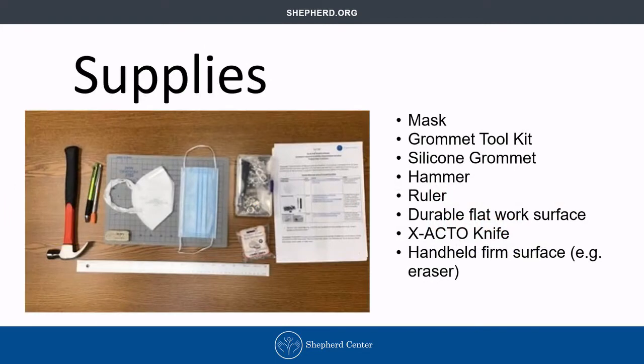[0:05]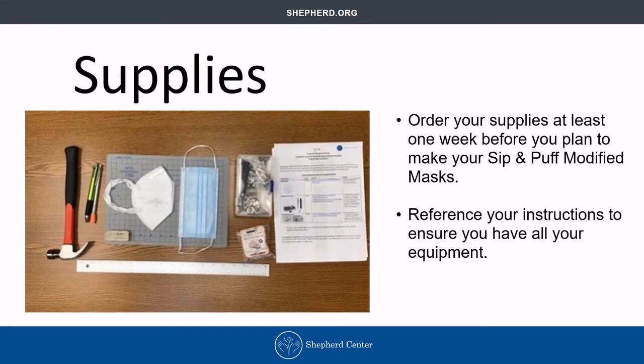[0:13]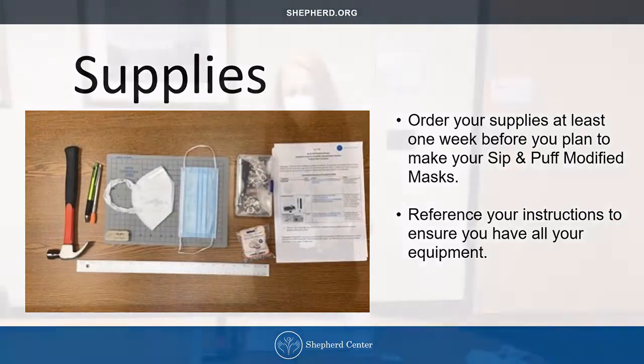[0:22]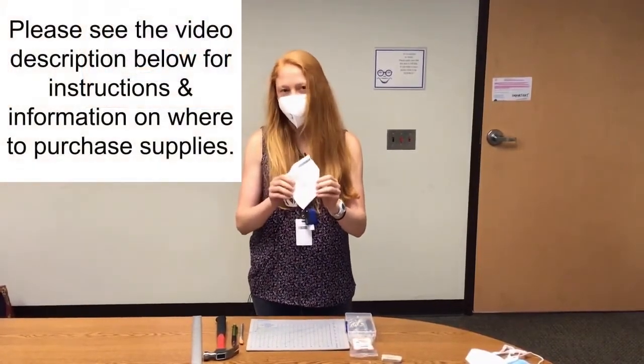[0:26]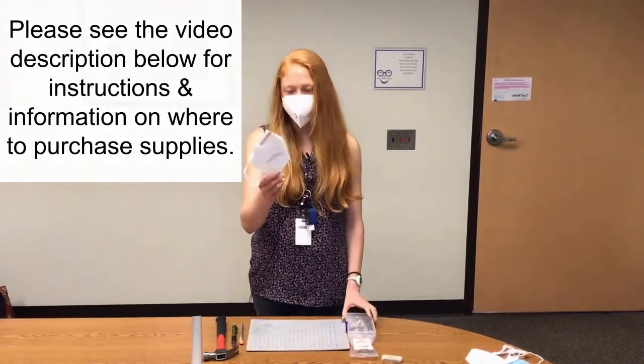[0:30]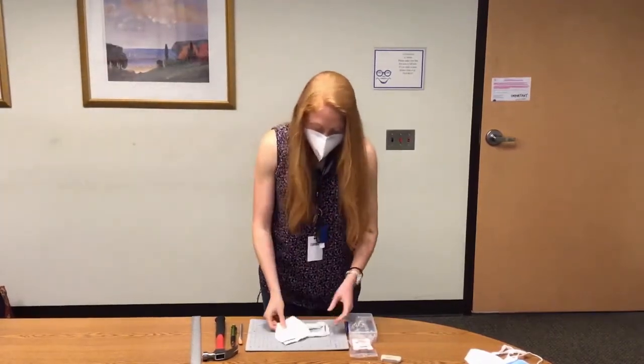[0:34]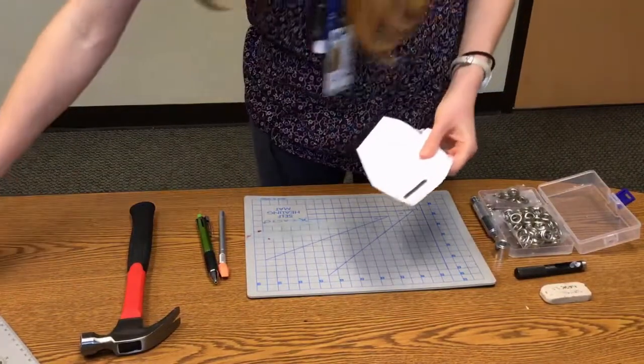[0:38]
We are making a sip and puff straw adapted KN95 mask. We'll start with an unmodified mask, just straight out the box, KN95. And the first step is to measure out your hole punch location.
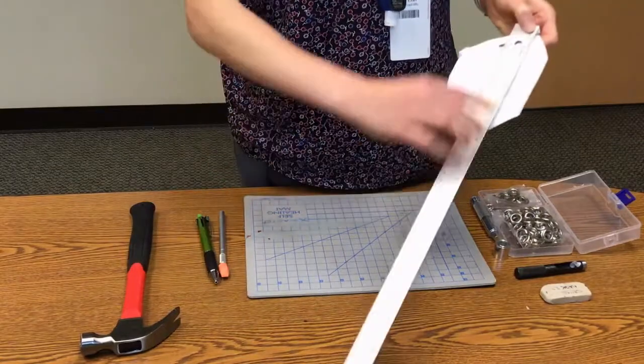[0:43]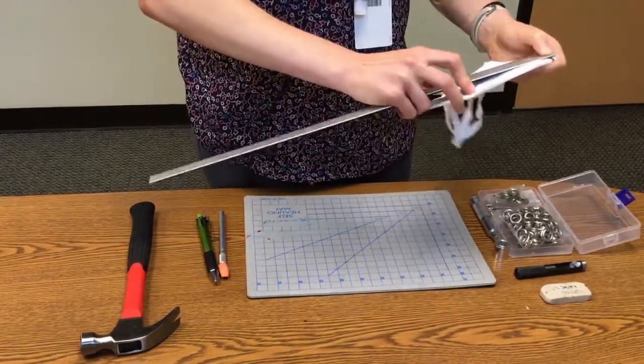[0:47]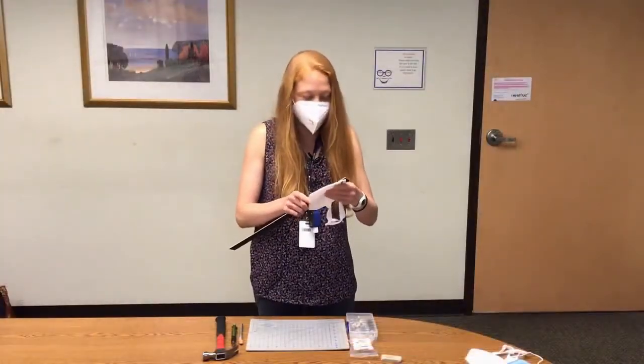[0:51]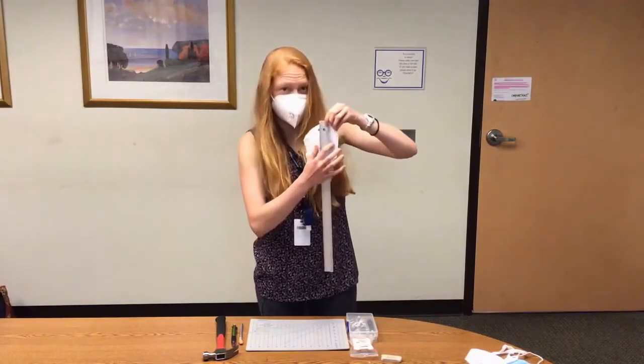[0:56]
So for most people, from the top arc down, 2 inches works really well. You could up that by an eighth of an inch or lower it by an eighth, but usually 2 is good. So that's right here.
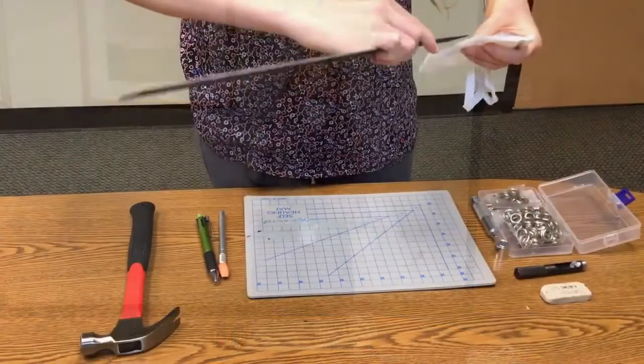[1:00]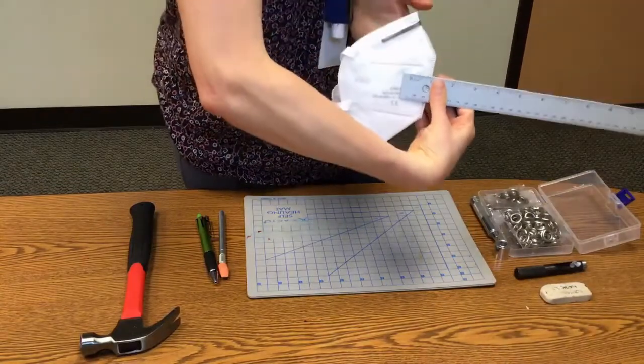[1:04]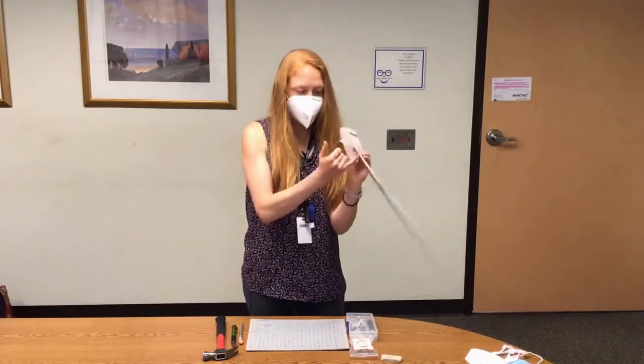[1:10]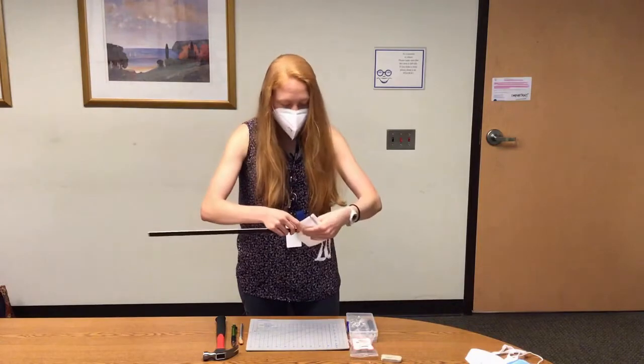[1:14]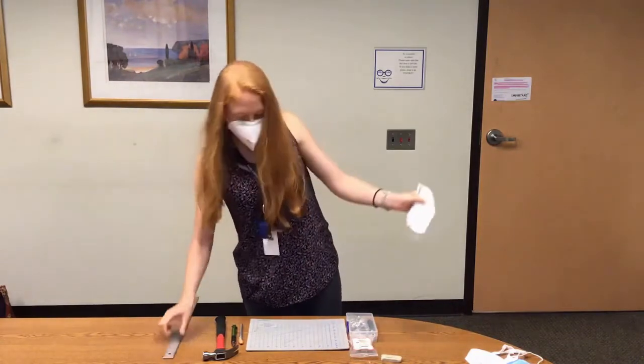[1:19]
And then from the front arc of the mask, you'd measure around 1 inch works best for most. It could be 7/8 or 9/8, but 2 inches down, 1 inch away from the front arc works best. Mark that with either a pen, pencil, or your thumb. So that's where I'm gonna punch the hole.
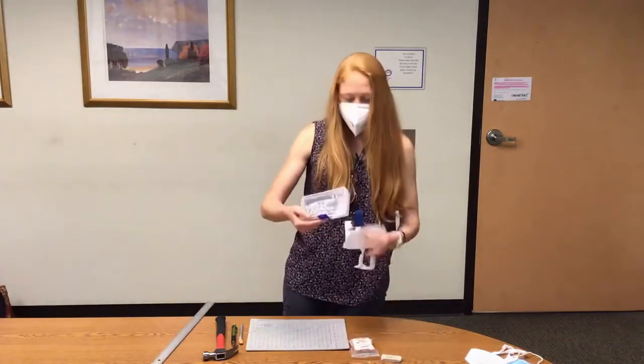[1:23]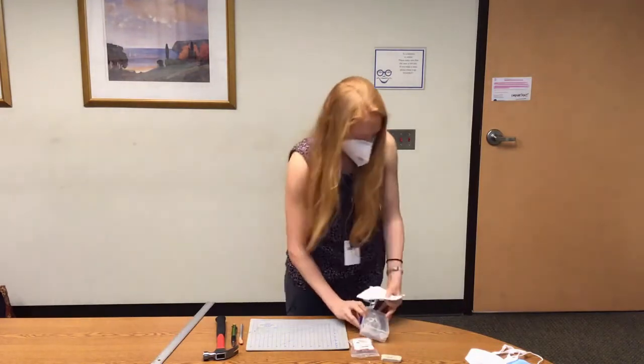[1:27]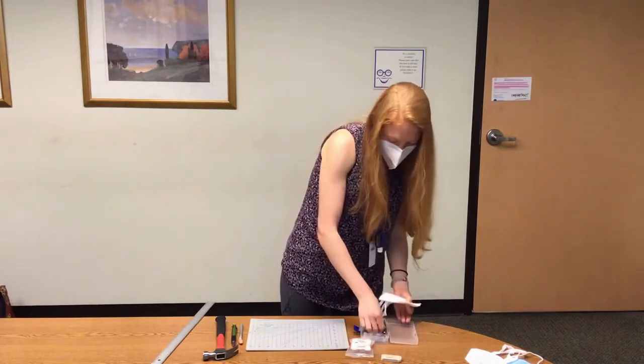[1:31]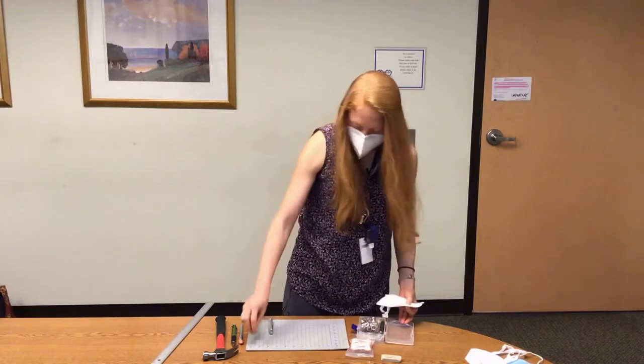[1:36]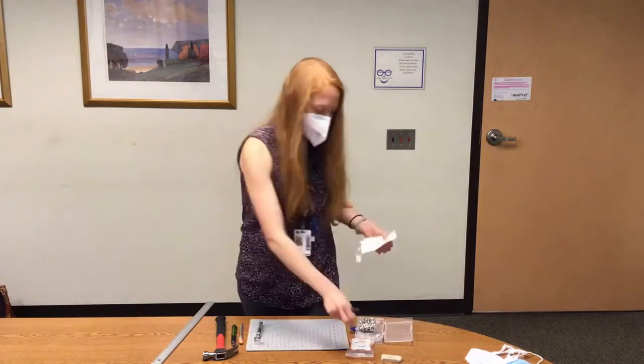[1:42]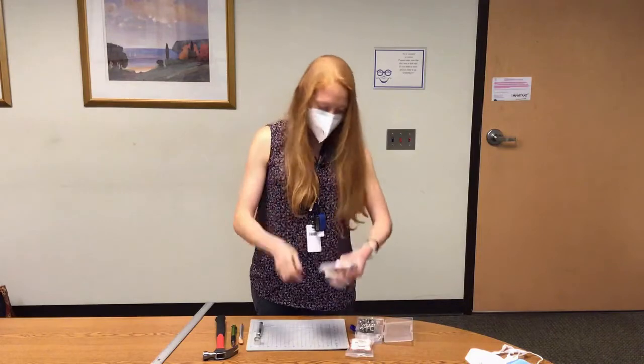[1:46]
The next thing is, you have this grommet setting tool that you can get online. It comes with your top and bottom half of your grommets, the mandrel setting die, and your hole punch tool, which is black with a silver sharp edge. This is what we use to punch the hole, the black tool.
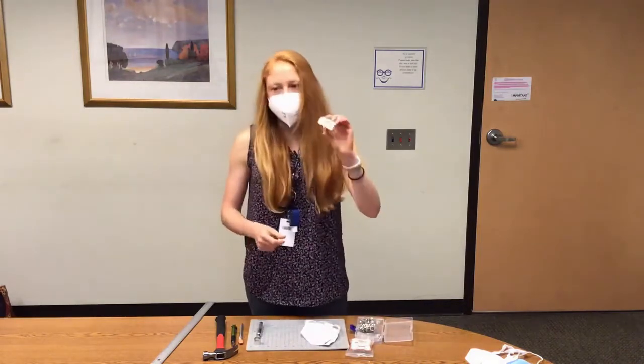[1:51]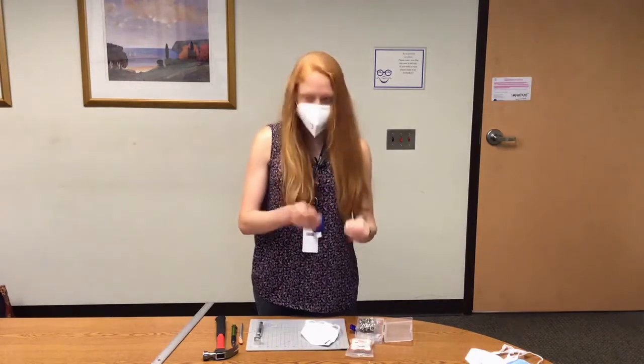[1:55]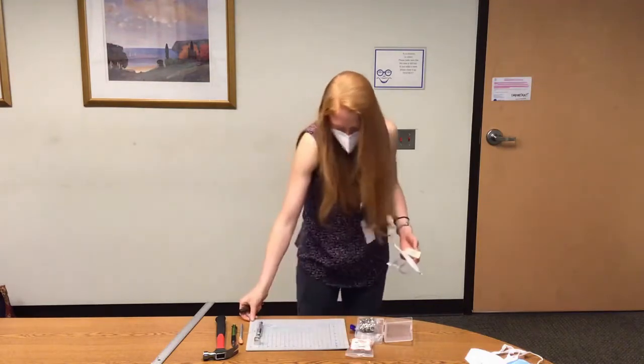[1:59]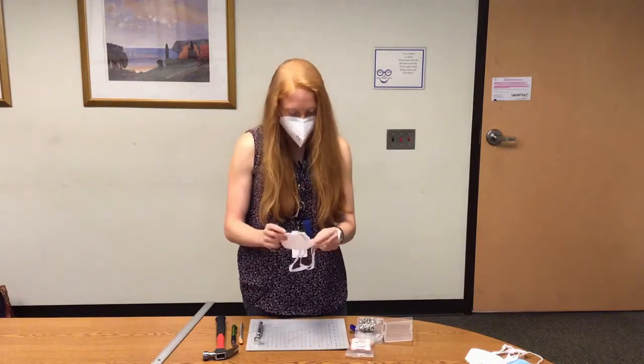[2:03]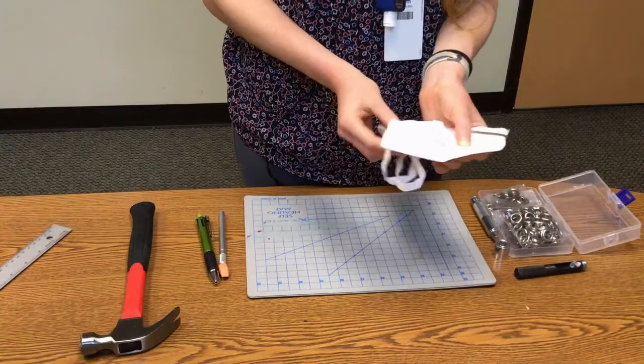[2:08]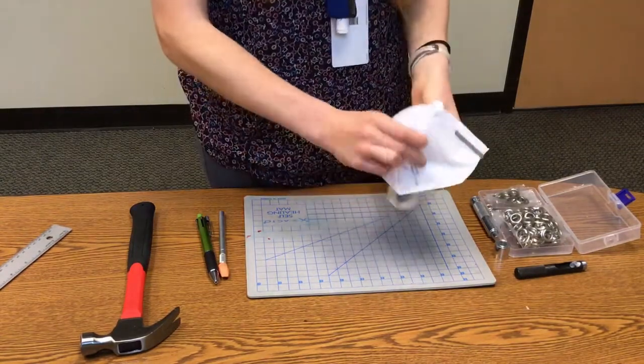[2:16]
I'm using an eraser, but all you need is a firm, durable surface that yields a little bit. Some people can use cardboard boxes, a healing mat, anything that is handheld, durable, and yielding. So I'm gonna take that surface, an eraser in my case, hold it on the inside of the mask. It's used to protect your fingers from getting cut by the sharp edge.
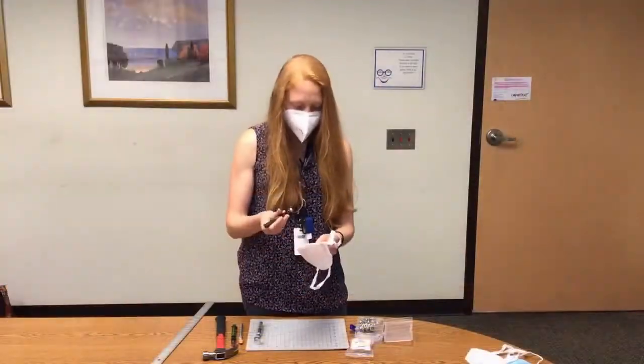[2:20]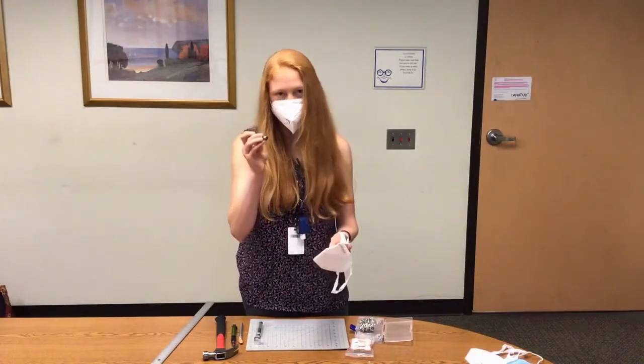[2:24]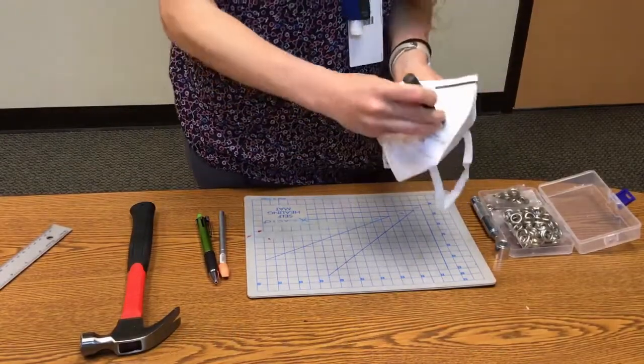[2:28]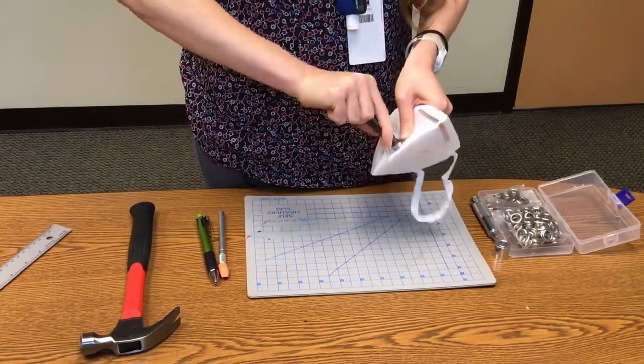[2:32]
Then where you've marked your ideal hole punch location, center the sharp edge of your hole punch tool around that, and then press firmly and twist. So that's what I'll do now.
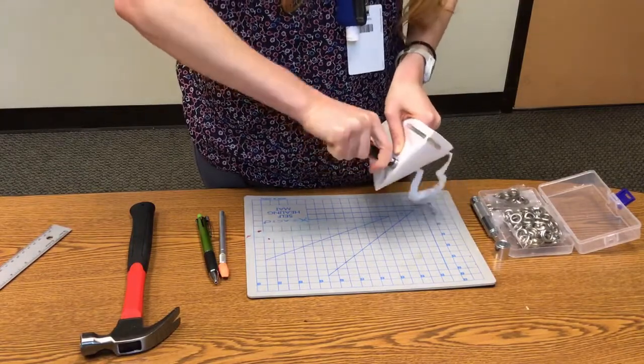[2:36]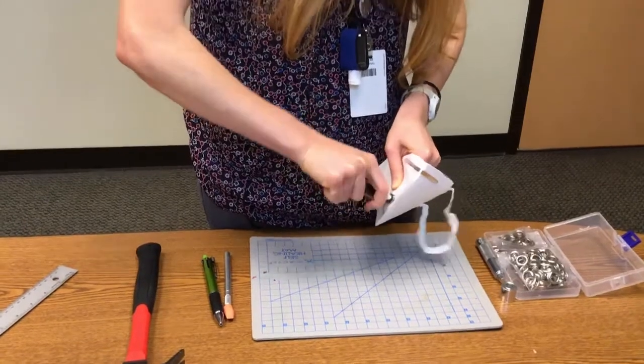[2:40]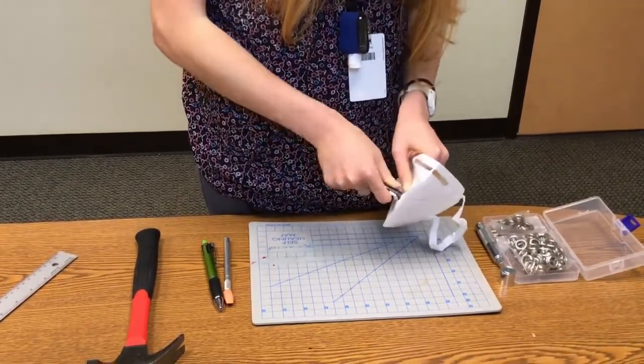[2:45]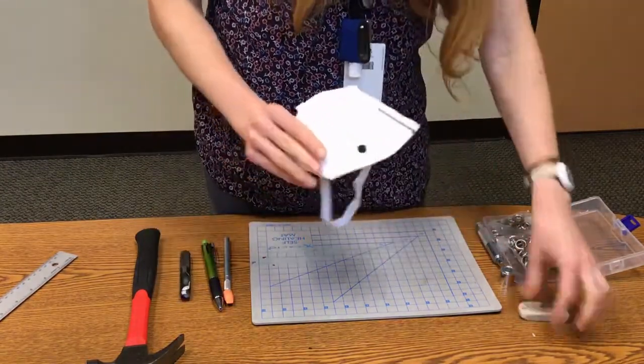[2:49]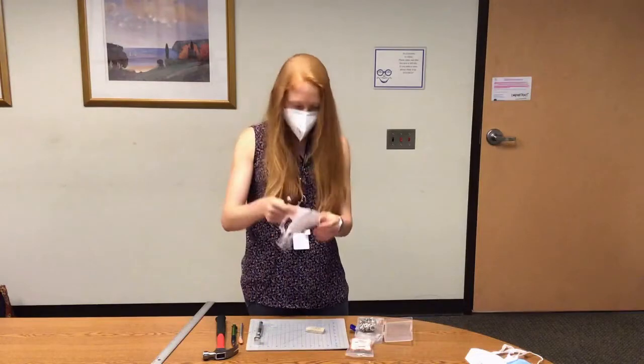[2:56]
Okay, so the hole is punched. Cool. The front looks like that. Inside looks like that. So you can set this tool aside.
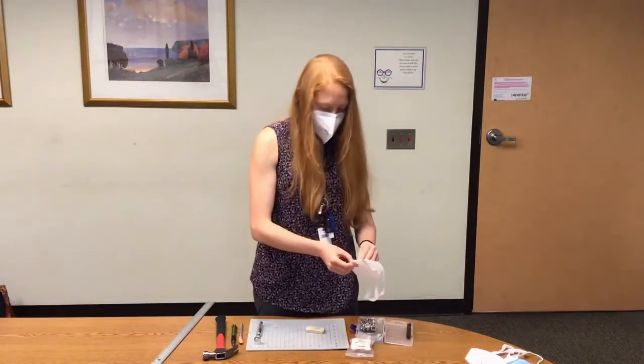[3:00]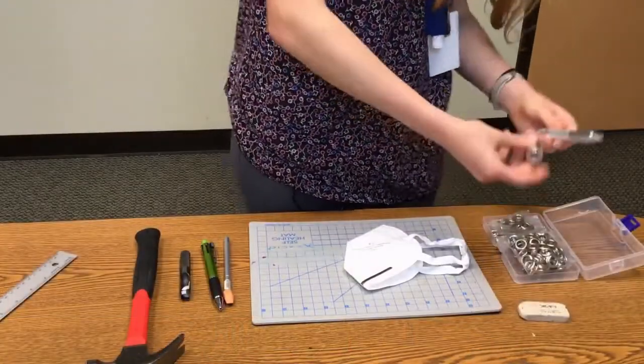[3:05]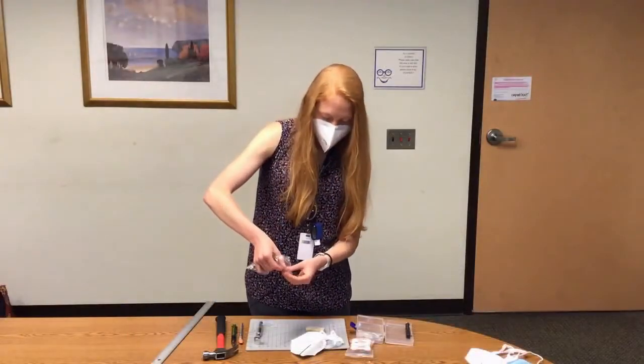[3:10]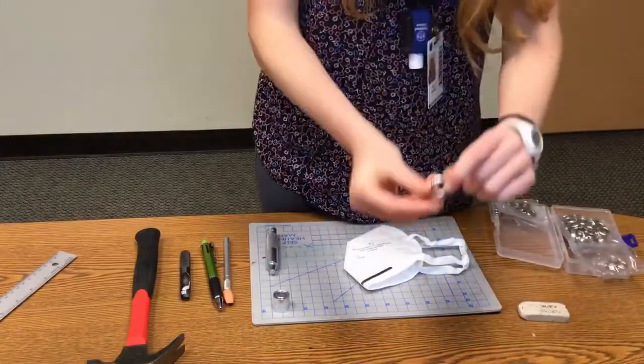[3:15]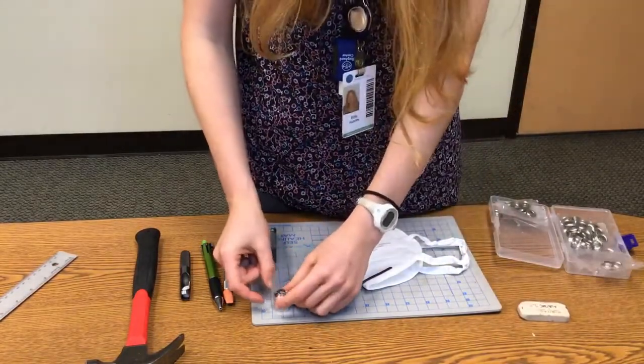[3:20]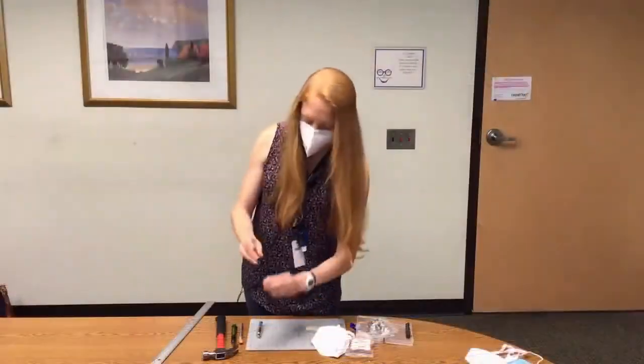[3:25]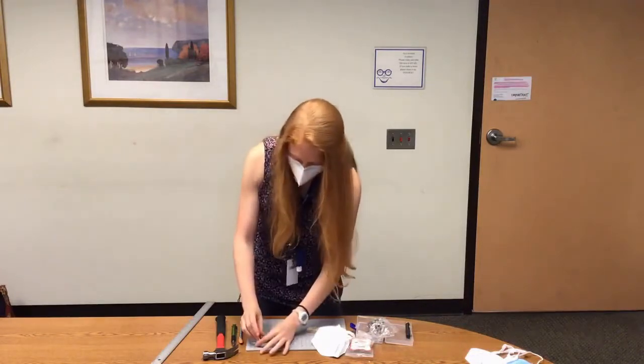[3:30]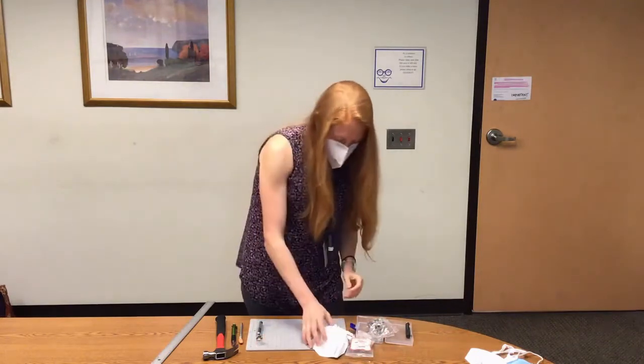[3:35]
The next thing you'll do is align your grommets. So I'm taking out a top half grommet right now. It has a rounded front and a really small cylindrical back edge to it. That's going to be the front facing side of the mask, so you'll see it on this side. You want to align that with the rounded side down onto your setting die. It's a short metal cylinder. So aligned like that. Face that down.
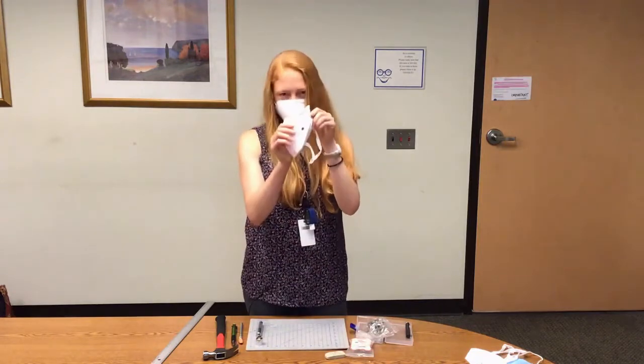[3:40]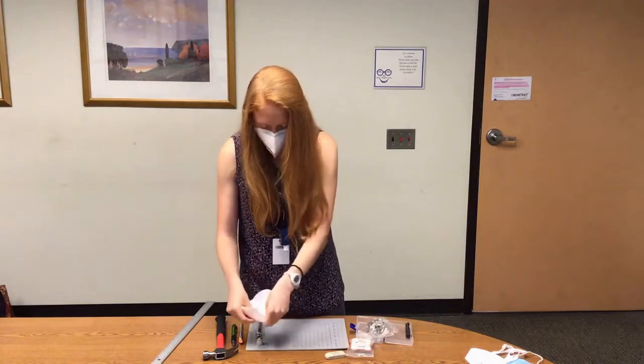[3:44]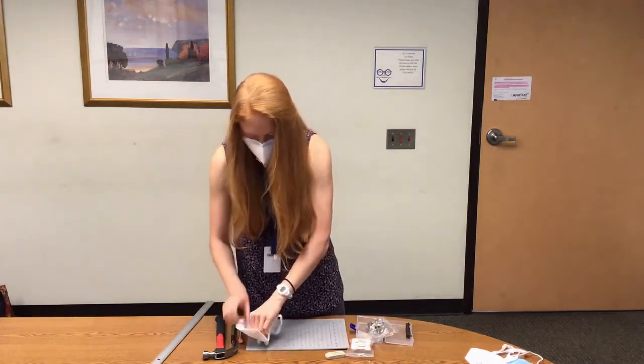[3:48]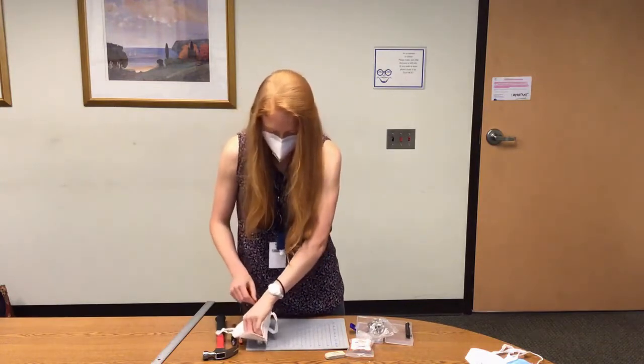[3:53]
Then you'll take the front side of the mask where you've punched your hole, and you'll align the hole around the top of the grommet that's sitting on top of your short metal setting die. I can chill there for now.
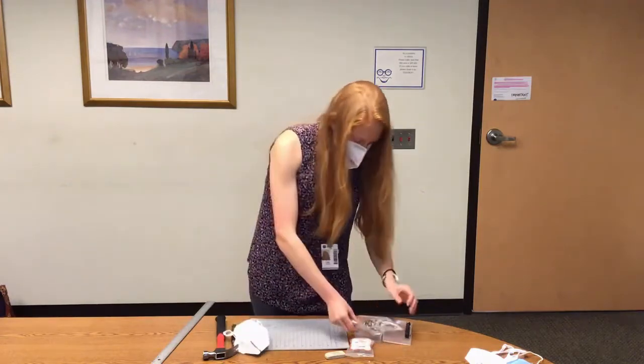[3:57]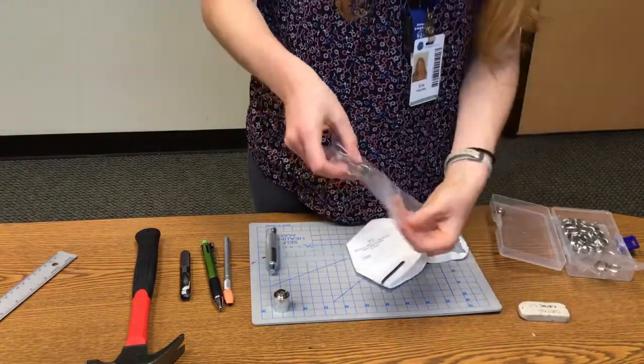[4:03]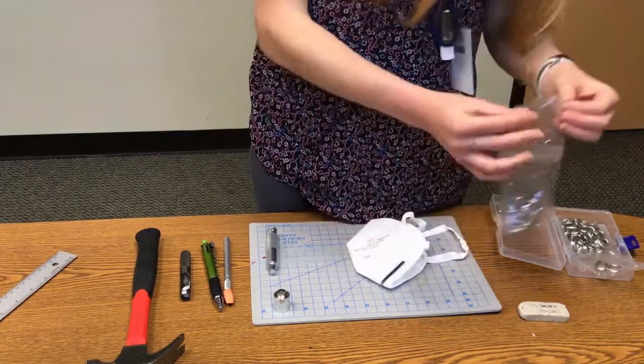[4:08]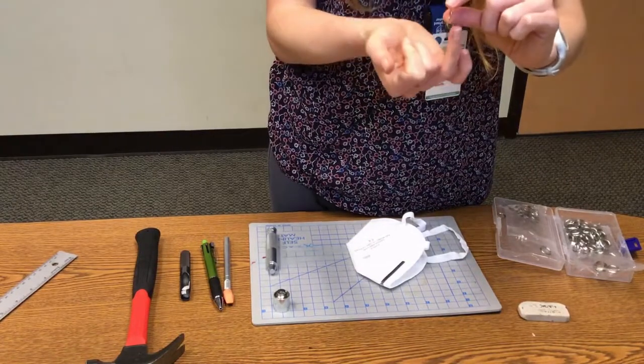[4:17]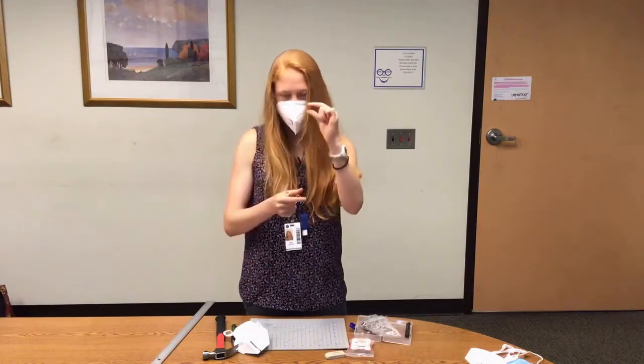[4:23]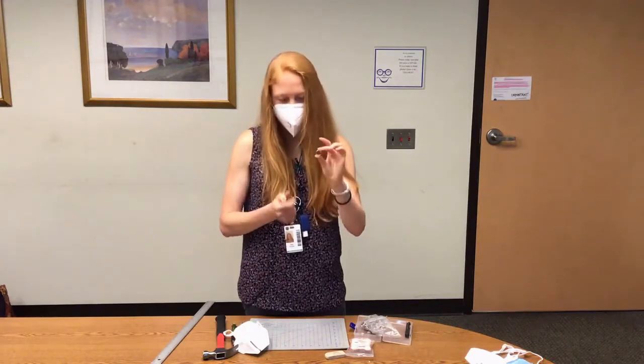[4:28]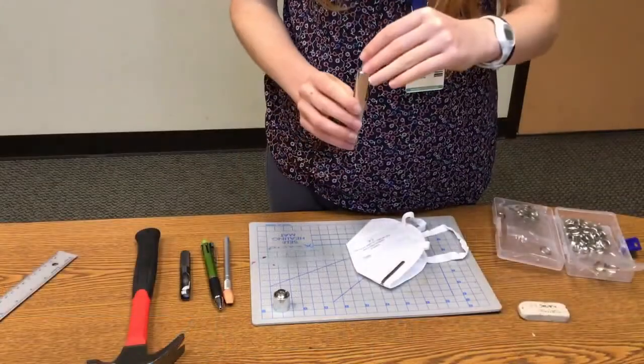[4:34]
Now I'm getting a bottom half of the grommet. It's going to be on the inside of your mask. So you'll take the bottom grommet eyelet. It's a small cylindrical disc. It does not have that straight cylinder sticking out. It's just a flat disc. It has a slightly flatter edge and a slightly rounded edge. You want the rounded edge to be facing this long metal cylinder tool. So face that down.
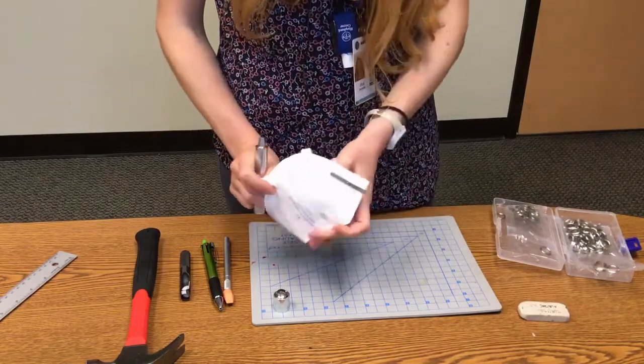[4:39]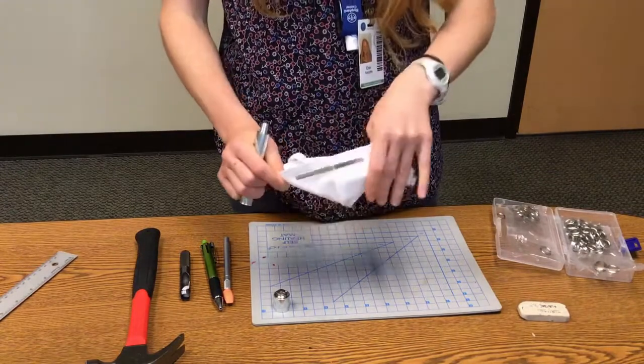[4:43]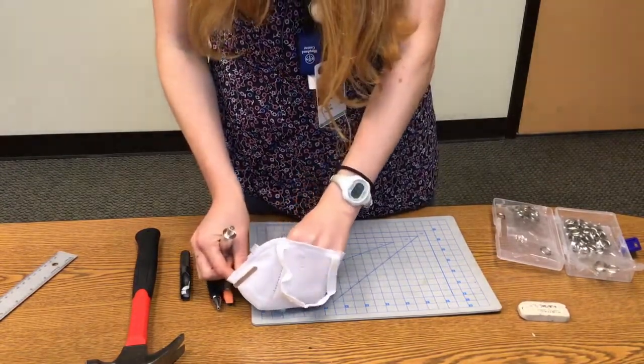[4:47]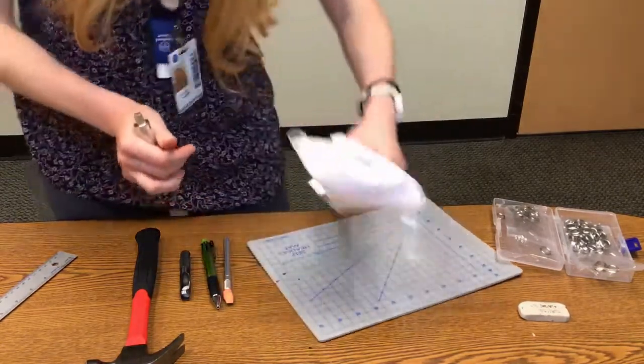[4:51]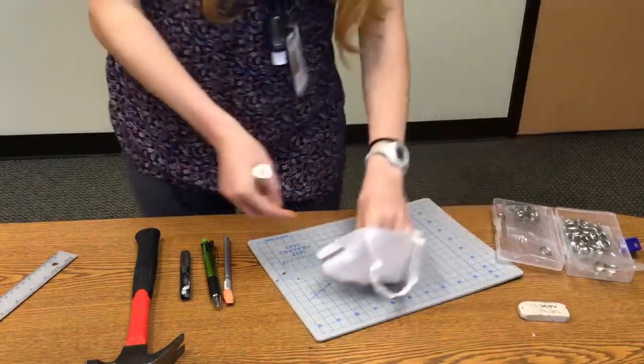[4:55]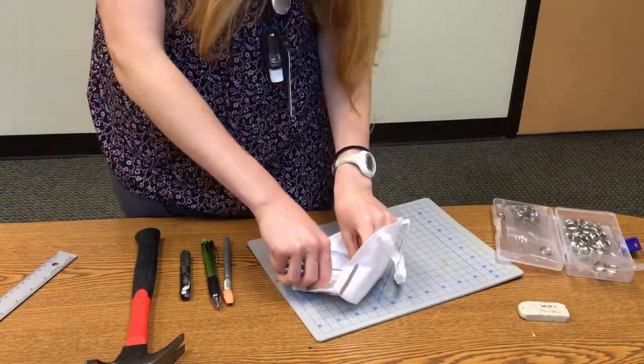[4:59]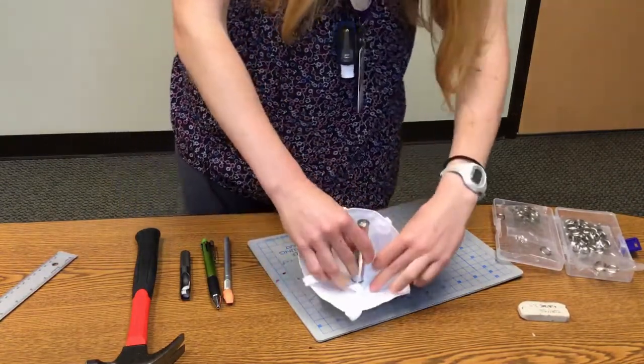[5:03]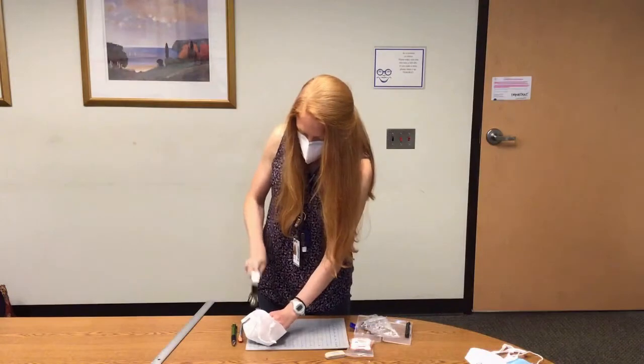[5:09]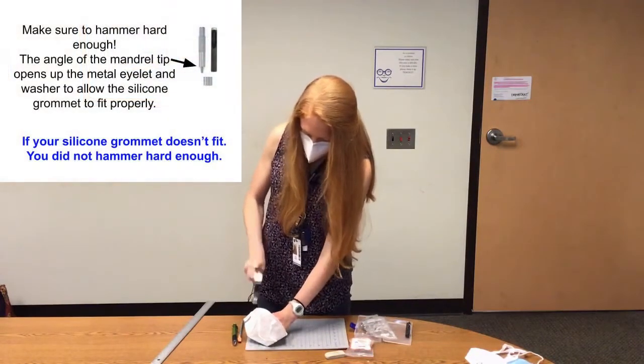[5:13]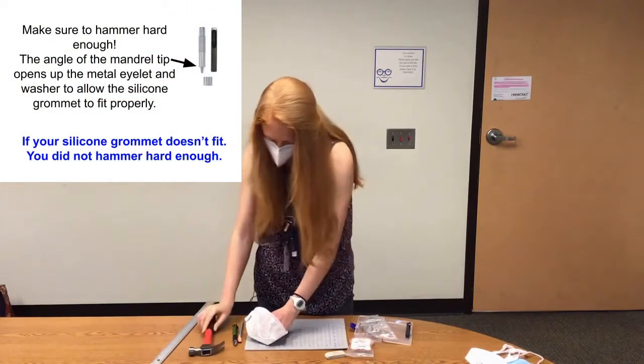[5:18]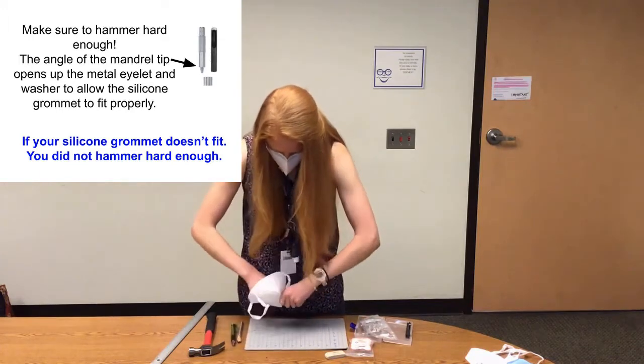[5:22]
Then you have where you've aligned the top grommet on the setting die, the mask hole around that, the bottom grommet eyelet, and then the long metal setting tool. And then you'll hammer that entire assembly down. I kind of hammered a little too hard.
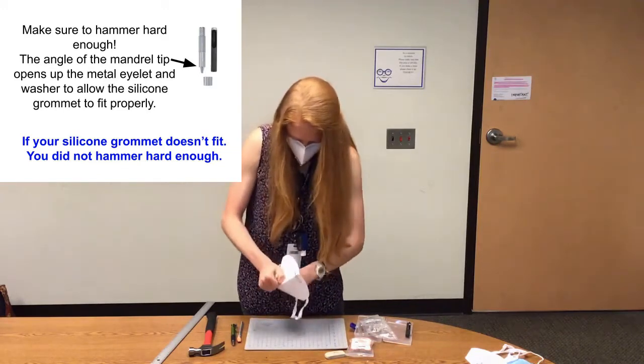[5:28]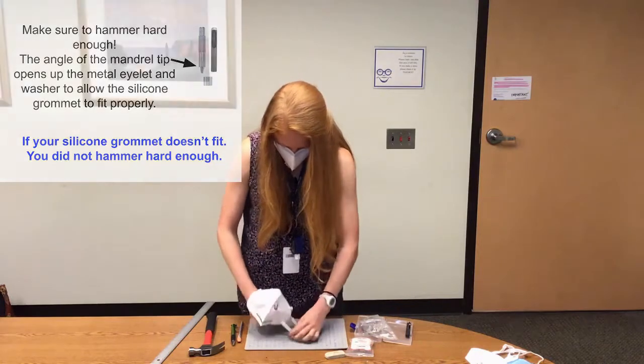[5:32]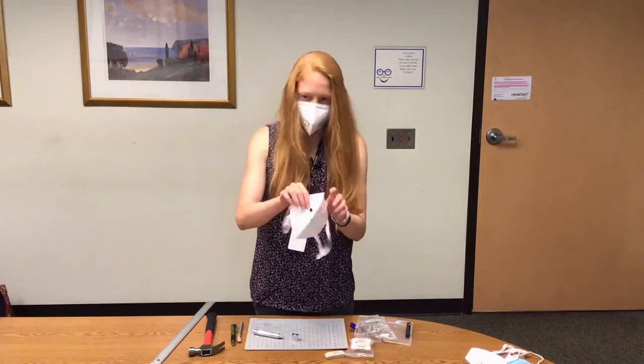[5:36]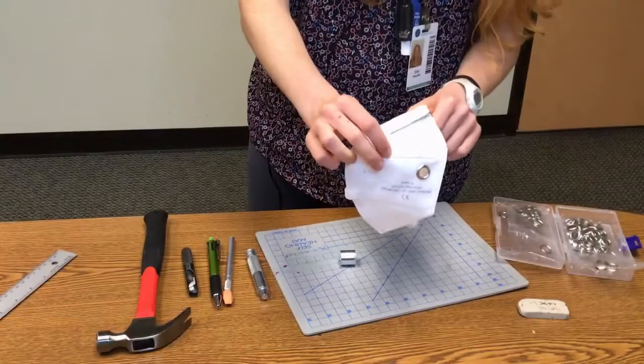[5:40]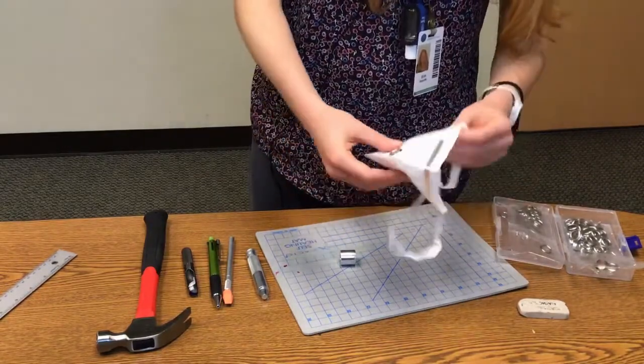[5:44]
Alright, so that's the set grommet. That's finished, this is the front. The inside of the mask looks like that.
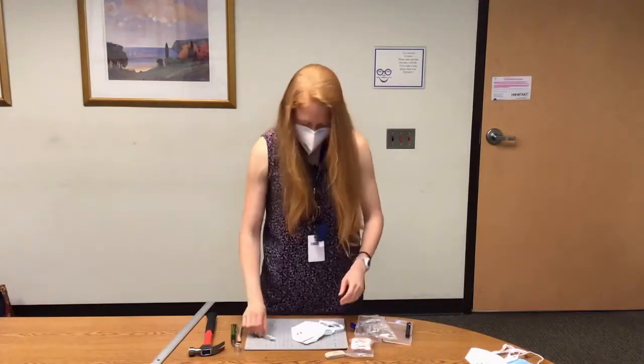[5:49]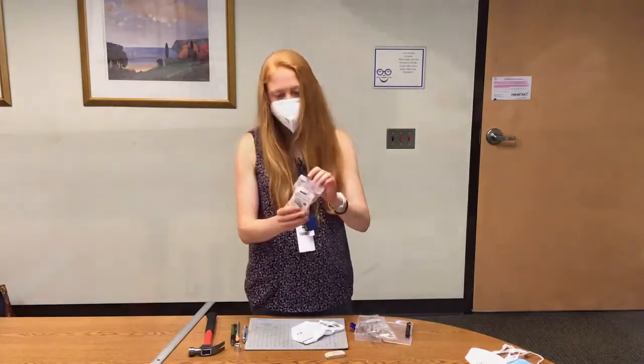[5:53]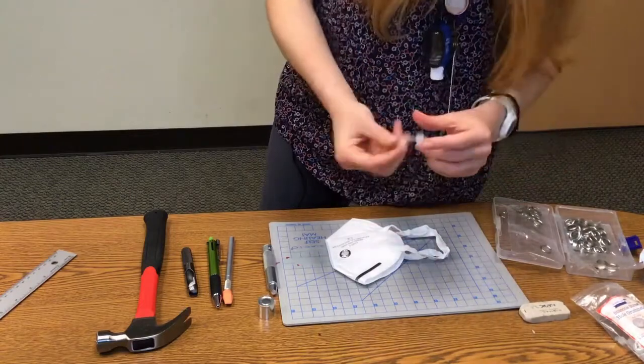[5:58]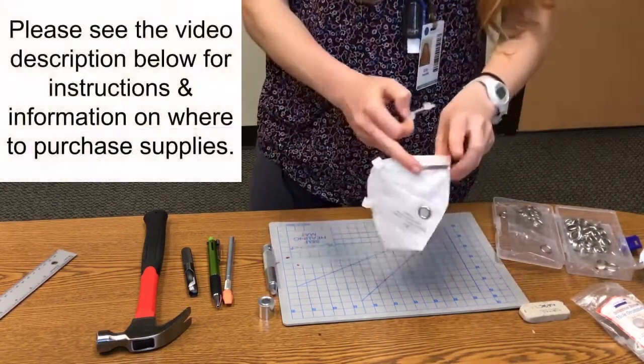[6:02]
The last step is to insert your silicone straw hole grommet with an attachable plug. So you can get these online. They come in 40 per pack for around $9.
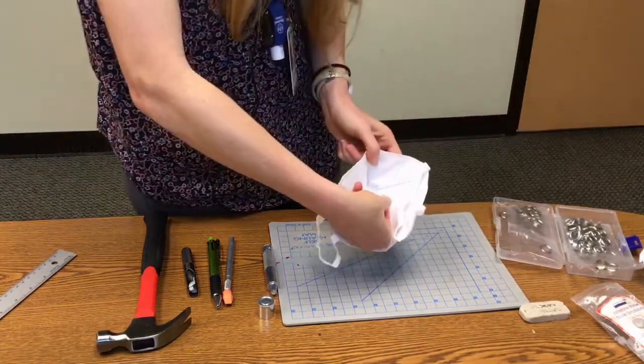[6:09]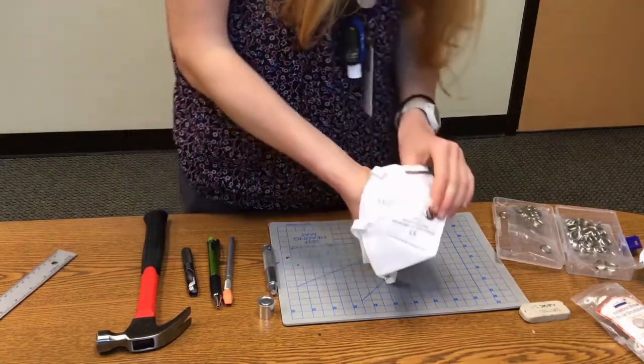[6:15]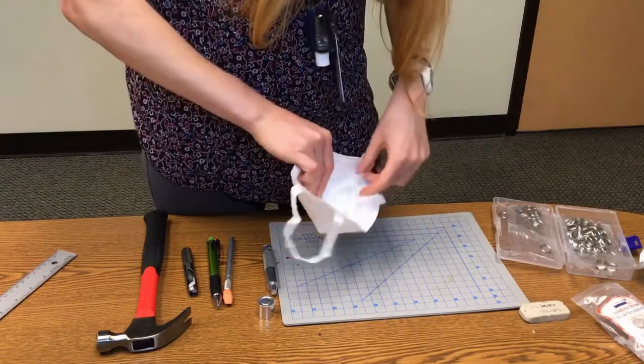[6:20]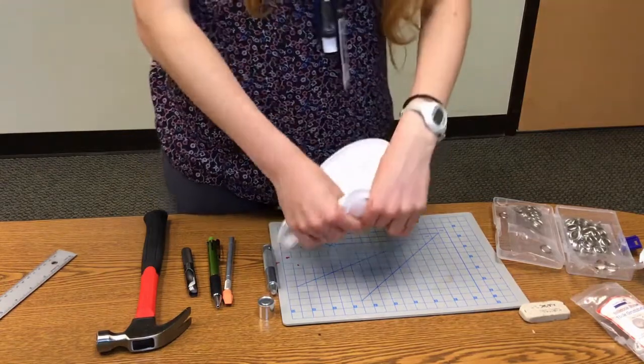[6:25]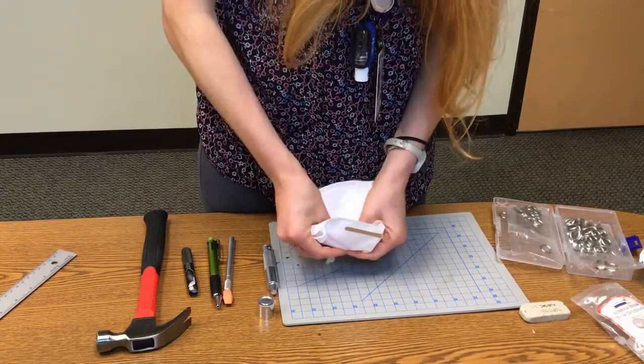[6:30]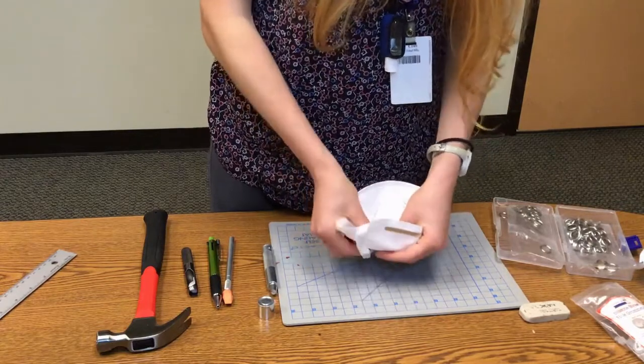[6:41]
What you want to do is make sure that from the outside of your mask, this plug is closing the mask. The easiest way to do that is to take the plug and from the inside align the plug so that the attachable line part of it is parallel with your mask top and bottom, or the line on your KN95. Once you have that plug aligned, insert the silicone within the metal grommet.
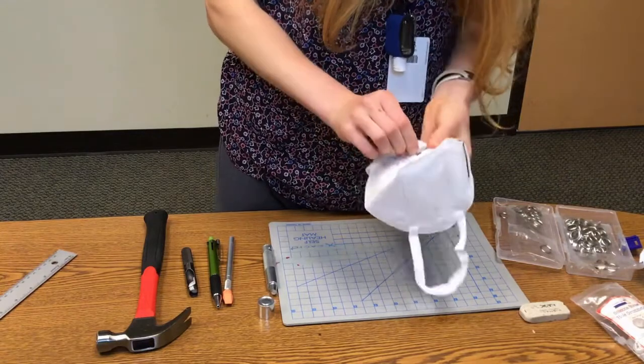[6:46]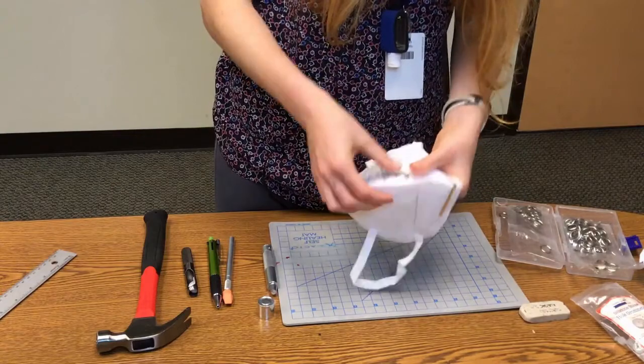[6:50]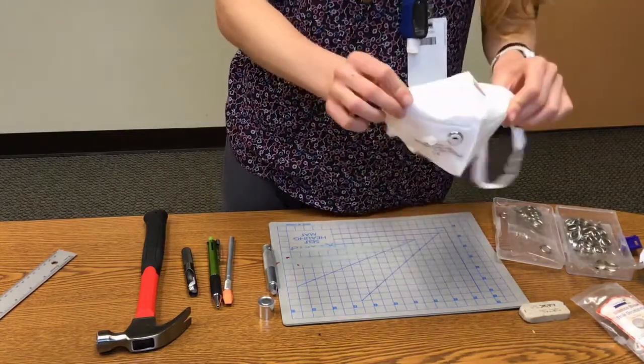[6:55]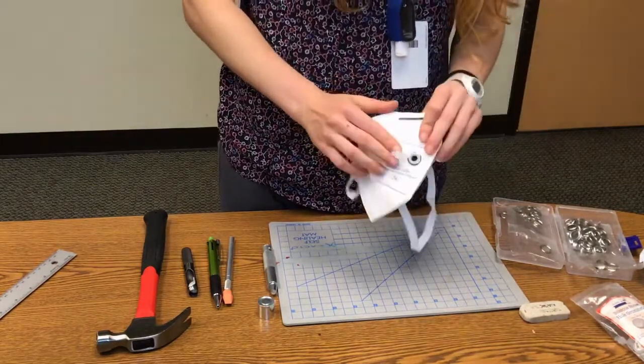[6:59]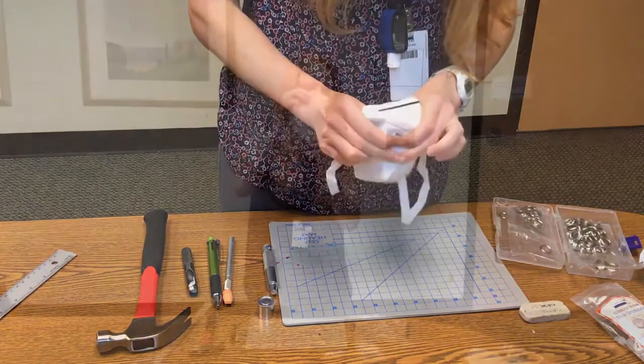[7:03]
And then make sure that the silicone on both sides is hugging each side of the set metal grommet in the mask. So that's done. This is what the finished mask will look like with the plug open.
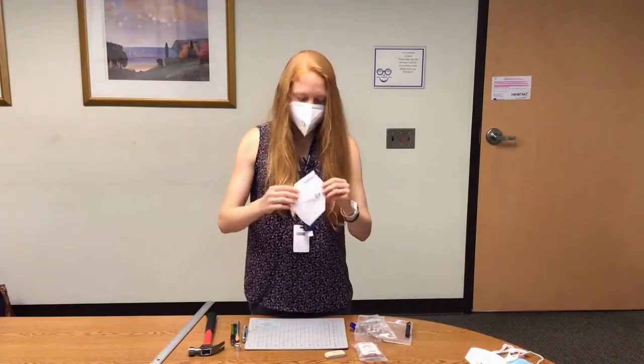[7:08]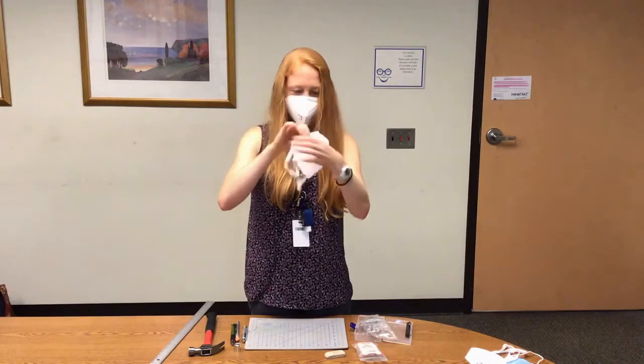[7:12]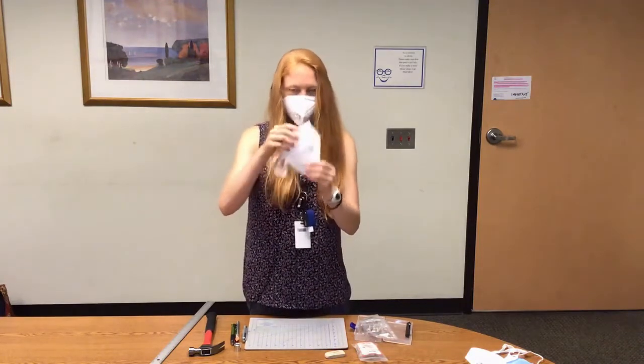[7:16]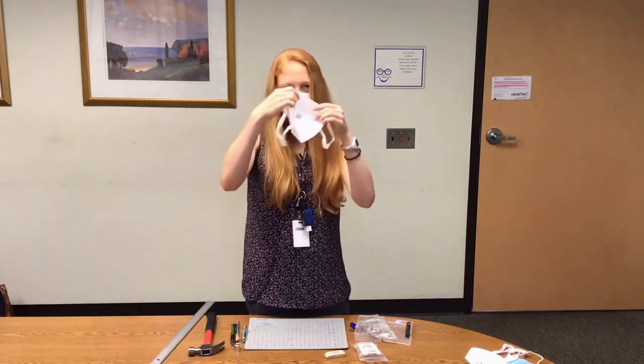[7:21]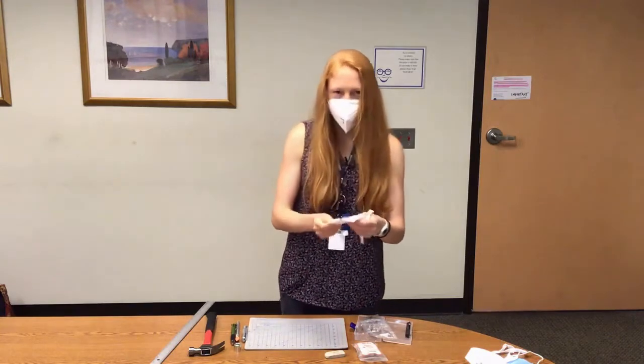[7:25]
Front, inside. And this is what the Sip and Puff mask will look like when plugged. And that is your finished Sip and Puff Straw Modified KN95 mask.